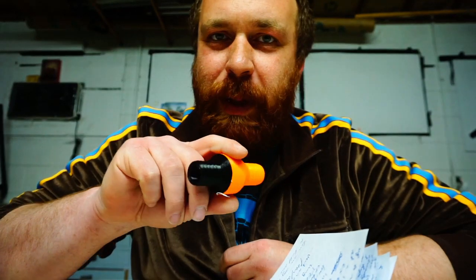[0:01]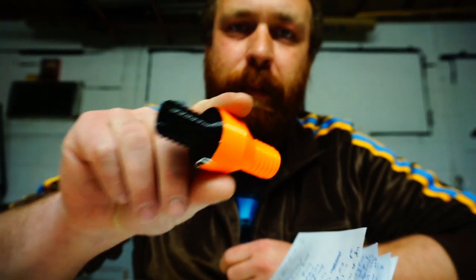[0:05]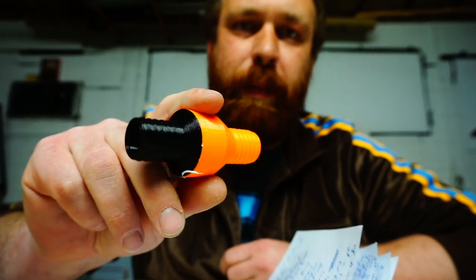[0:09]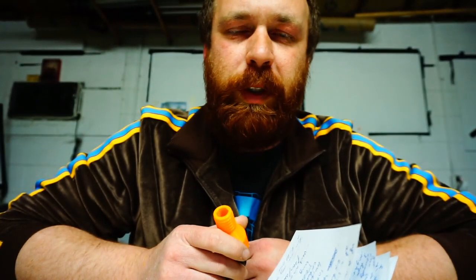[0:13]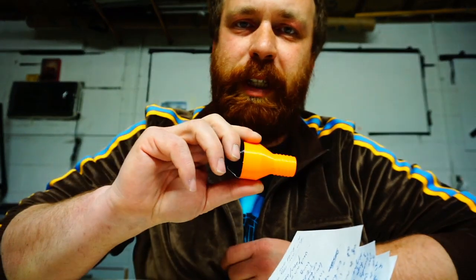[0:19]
All right, so I printed this check valve as a piece of a ventilator. Check out my other videos on my ideas around building a ventilator and what might go into it. Check the links below for open source ventilator projects that people are working on all over the world right now, many smarter people than me, if you are interested in that project.
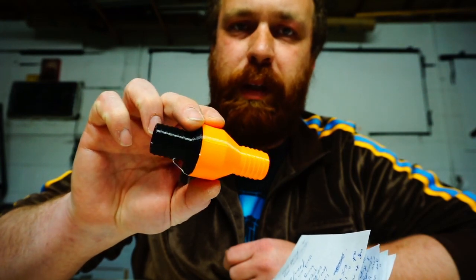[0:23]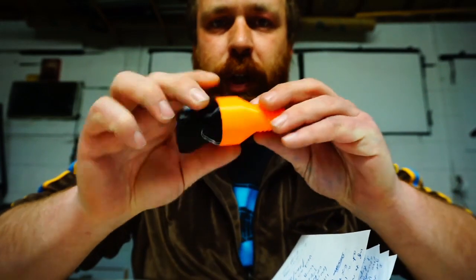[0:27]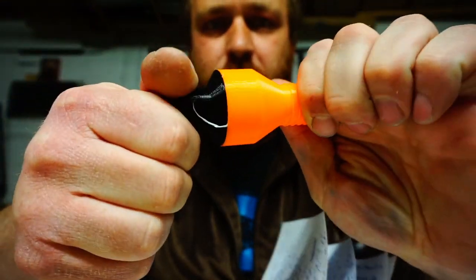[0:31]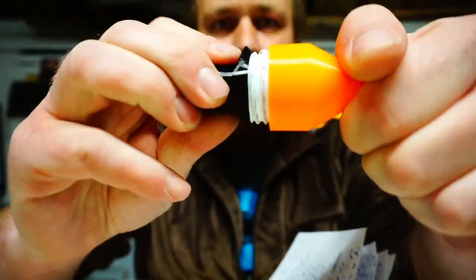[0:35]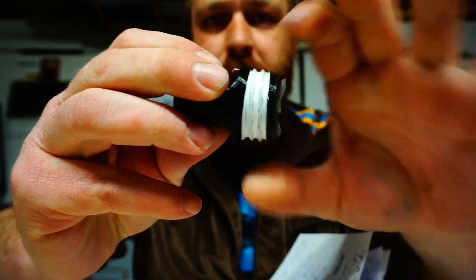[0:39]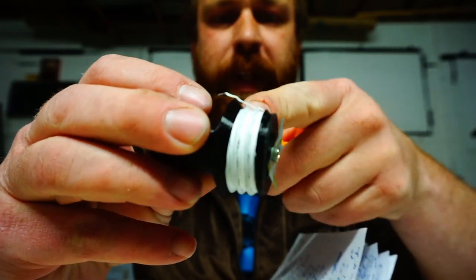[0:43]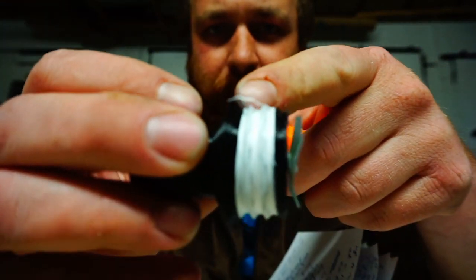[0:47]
This video is about just how this check valve works and how you can print it and how to find the files. So real quick, this is two 3D printed pieces. You can unscrew them. Right now I'm using plumber's Teflon tape to keep these threads sealed. The tape has to go up against this little lip here to seal tightly.
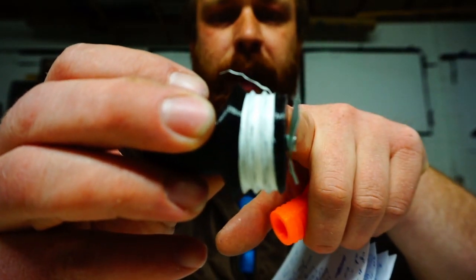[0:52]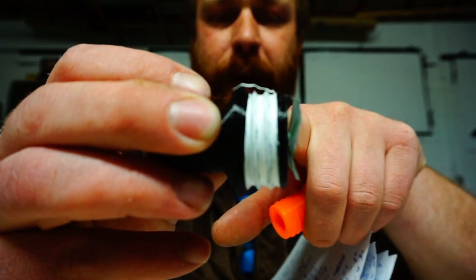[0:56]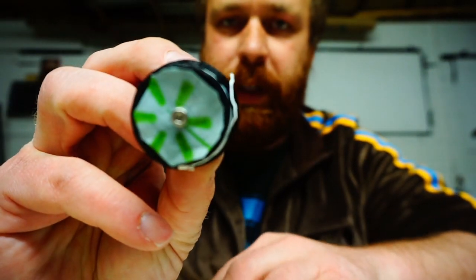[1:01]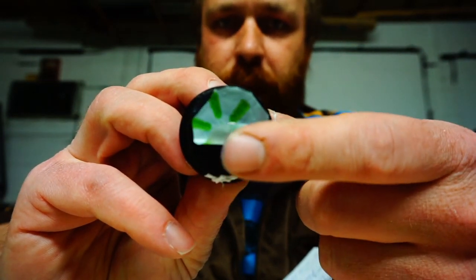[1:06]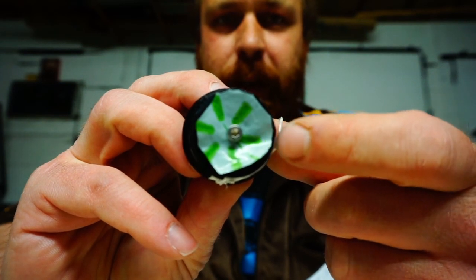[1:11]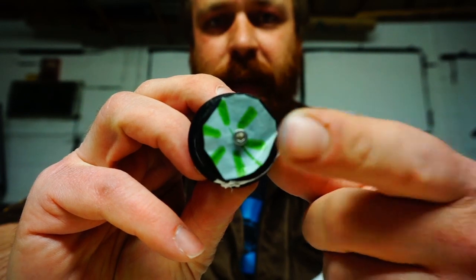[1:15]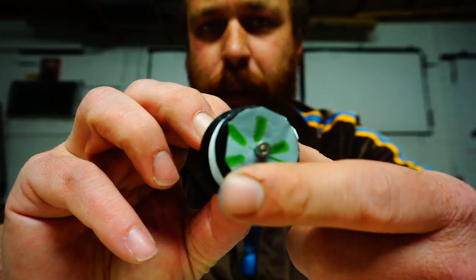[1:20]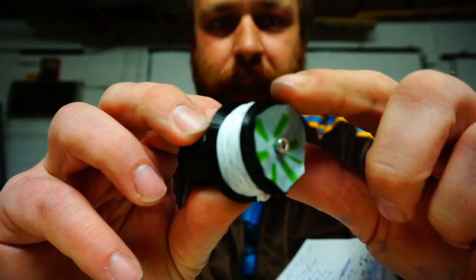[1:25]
They work great. If you can't get your hands on plumber's tape, you may be able to do this with some saran wrap or even a plastic bag. Speaking of a plastic bag, the diaphragm on this check valve is just a piece of a Walmart bag. I think it's important that we use food-safe materials. I don't know that they're necessarily medically breathing safe, but I think in an emergency situation, food safe is easy enough. So the eventual version of this thing will be made with a Ziploc food bag, but same deal, really, a piece of PET or something like that.
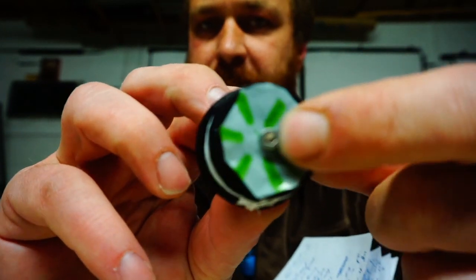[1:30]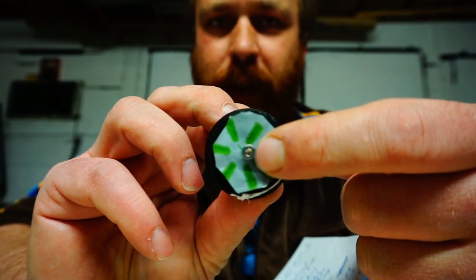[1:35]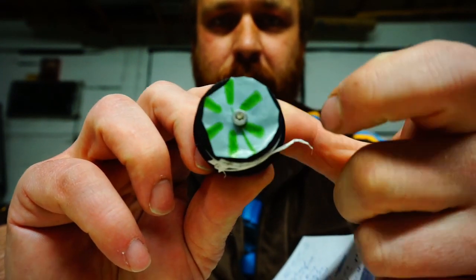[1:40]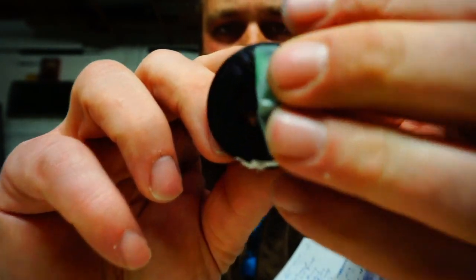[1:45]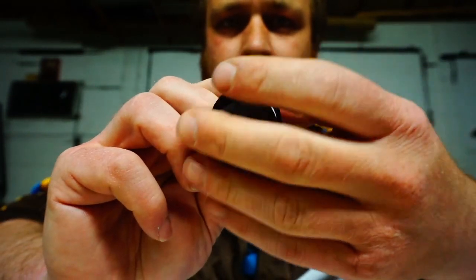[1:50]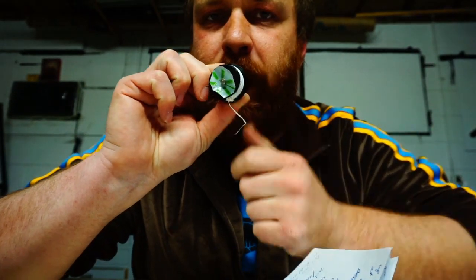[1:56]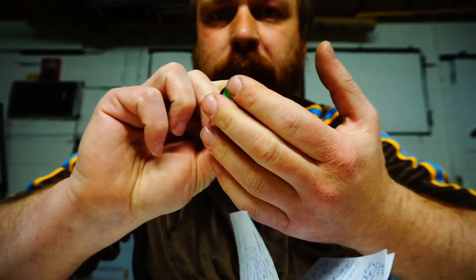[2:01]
Anyway, it's just a circle cut out from a bag and then one M3 hex screw. I think this one's about 6 millimeters long, but anything from 4 millimeters all the way to 20 millimeters will do, so long as you seat it against the bottom of the valve. So if you peel this guy back, there's a bunch of holes here in the face of this guy. And basically, when I breathe out, it blows the membrane out. And when I breathe in, it sucks the membrane against the flat surface and closes all of the ports.
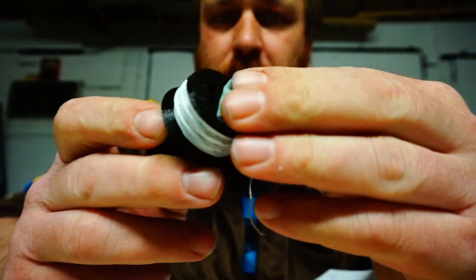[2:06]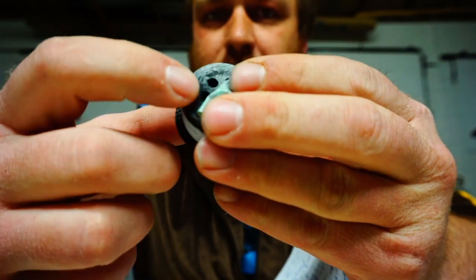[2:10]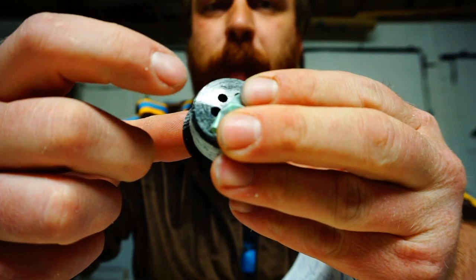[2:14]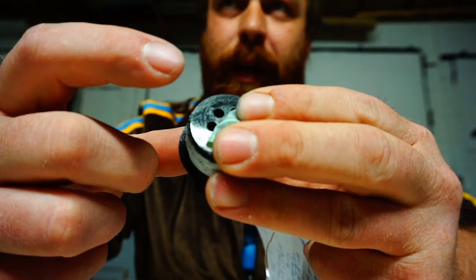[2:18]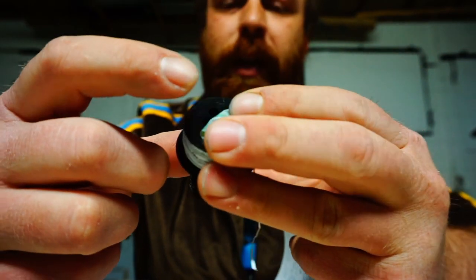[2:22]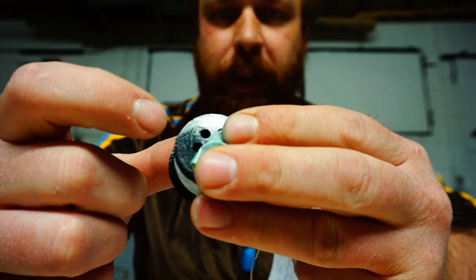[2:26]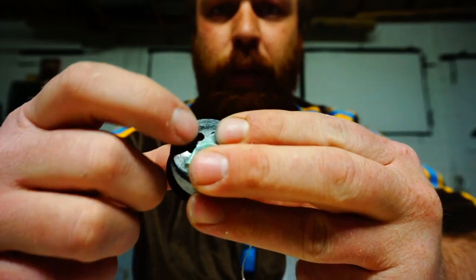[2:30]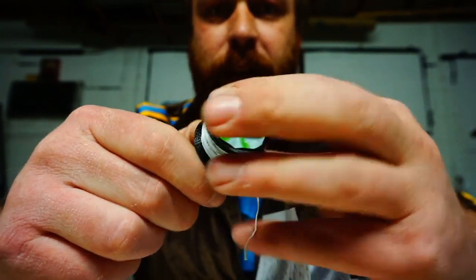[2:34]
It's really important that when you print this file, you print this surface against the print bed so that it can be nice and smooth. It's really important also that you print it against a clean glass print bed. No masking tape, or don't use a textured bed. Don't use glue sticks. Just use a perfectly clean glass bed, maybe with some hairspray to get the smooth finish, which is really important to make this airtight on the inhale stroke.
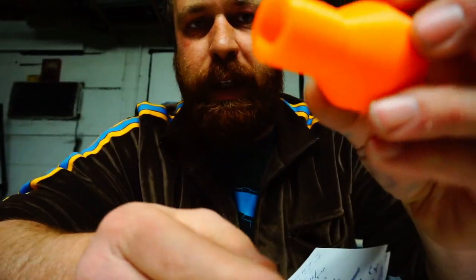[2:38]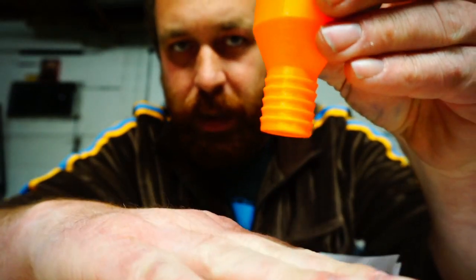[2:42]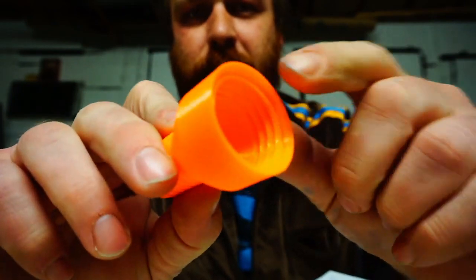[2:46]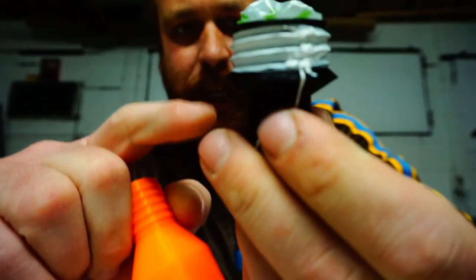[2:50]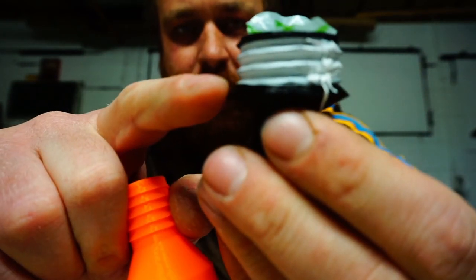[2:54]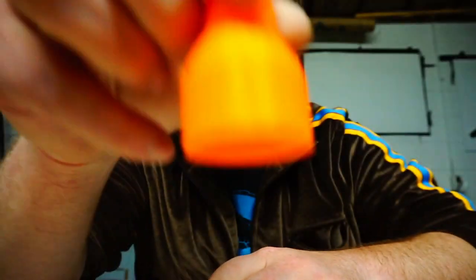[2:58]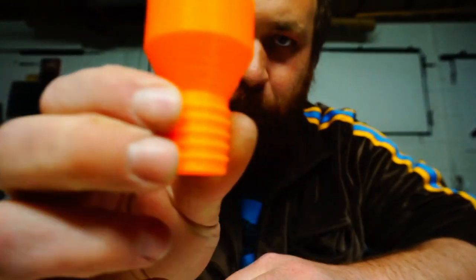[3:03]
This piece needs to be printed counterintuitively with this side down. There's a lip here which has a little bit to do with the geometry of the way things come off the printer. I couldn't make a square lip here to compress a sealing material, so this needed to be angled, which meant putting this on the printer this way didn't give it enough of a contact patch. Anyway, it prints just fine like this.
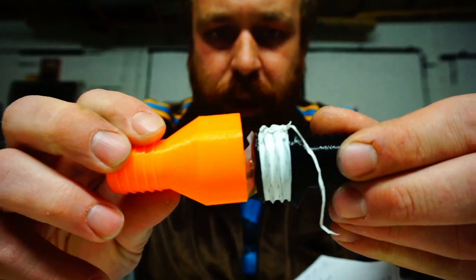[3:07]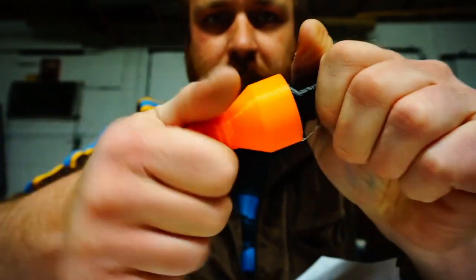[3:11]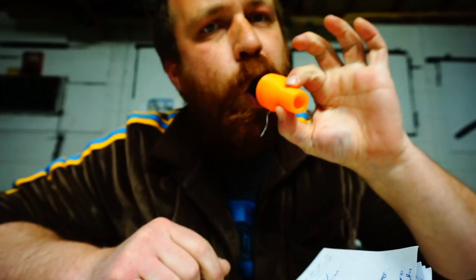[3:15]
And again, these guys just screw together pretty easily. Make sure they're tightened down. If these are screwed together, you should be able to blow one way and not blow the other. But you can suck this way, and you can't blow reverse on this side.
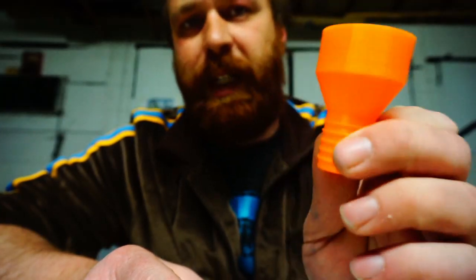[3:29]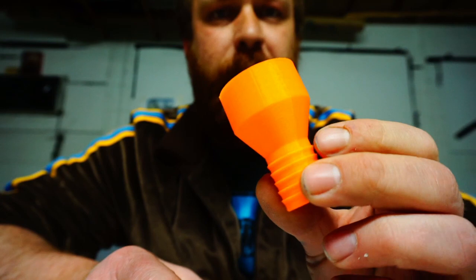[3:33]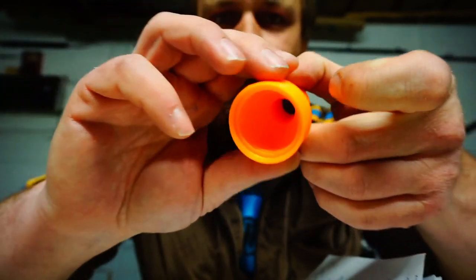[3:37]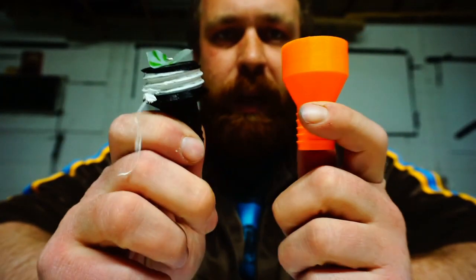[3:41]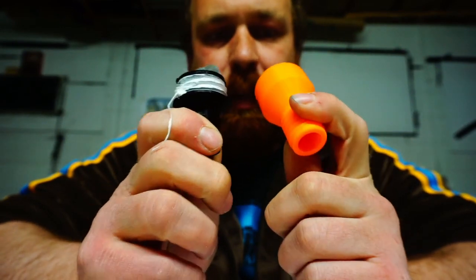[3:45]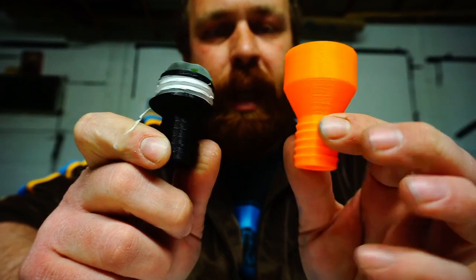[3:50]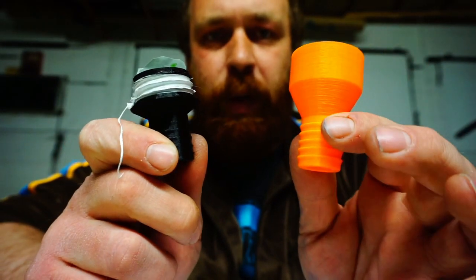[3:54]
Designed this to be printed as fast as possible with no trimming or any handwork afterwards like some of my other designs. This has a lip that just would not print very nicely on the bed, but it prints just fine like this. So the way I like to print these so far, and certainly you can make more durable ones, but I think these are plenty durable. What's important here is speed and cheapness. These are printed with three shell layers on the top, the bottom, and the walls. They're printed at 10% infill.
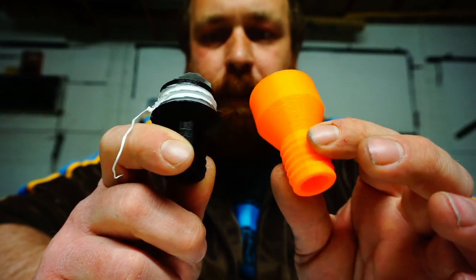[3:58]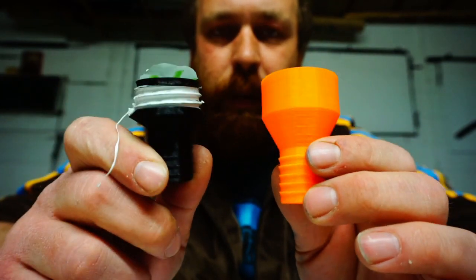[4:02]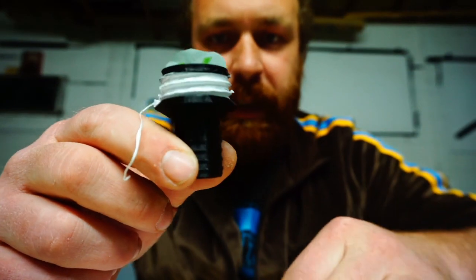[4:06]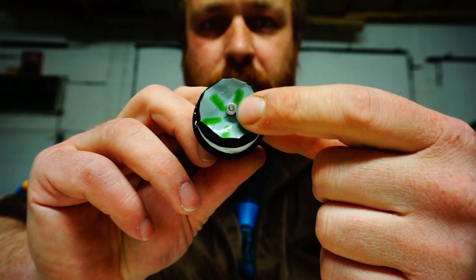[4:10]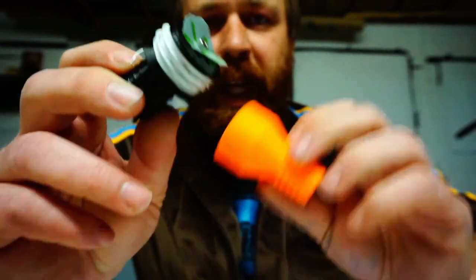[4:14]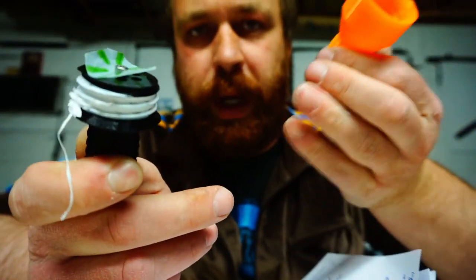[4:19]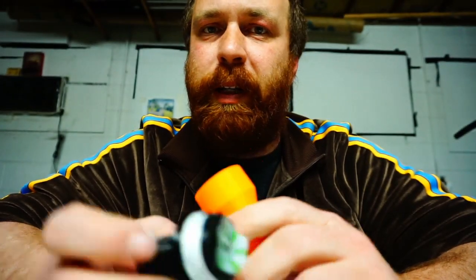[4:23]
And that's basically what you need to know. You don't need any support material. So this one on the bed like this, this one on the bed like this. This screw is an M3 hex screw. It's self-tapping into PLA. I think PLA is pretty good. It's relatively food safe, although not cleanable in the way I would like because of the ridges. But I think this would do as sort of a disposable piece of a ventilator.
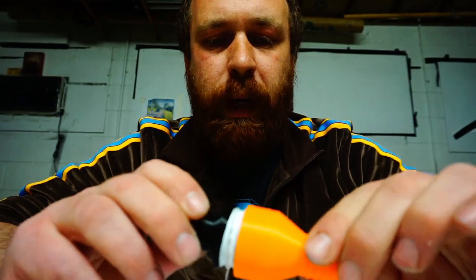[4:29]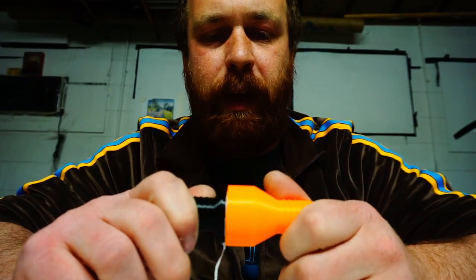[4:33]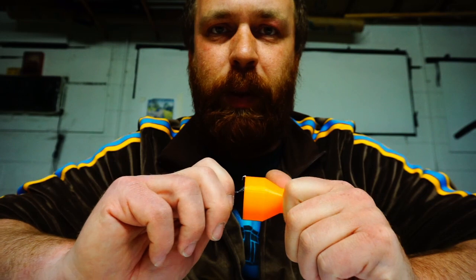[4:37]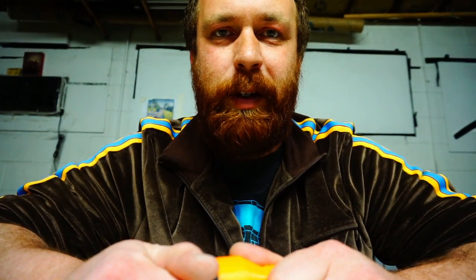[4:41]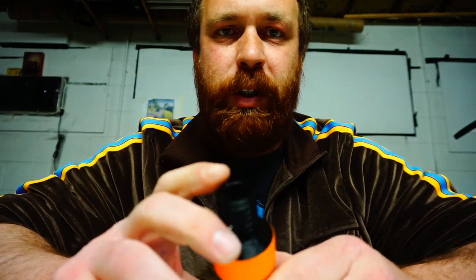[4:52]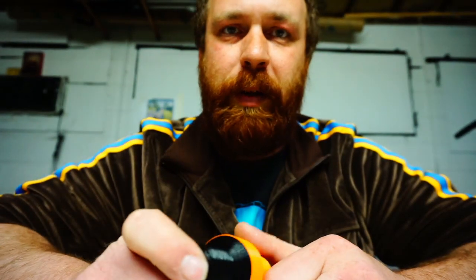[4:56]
I'm really excited to see what other pieces of a ventilator you guys might build and the way you might use this check valve to do so.